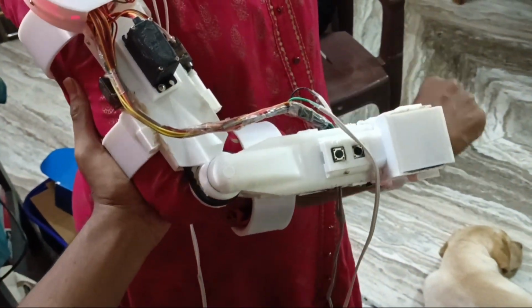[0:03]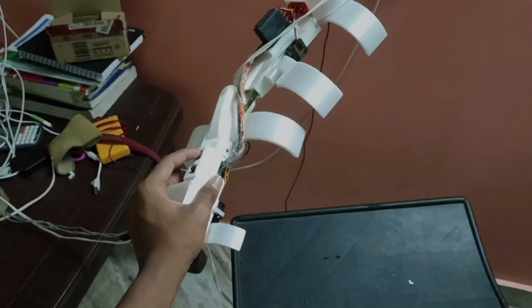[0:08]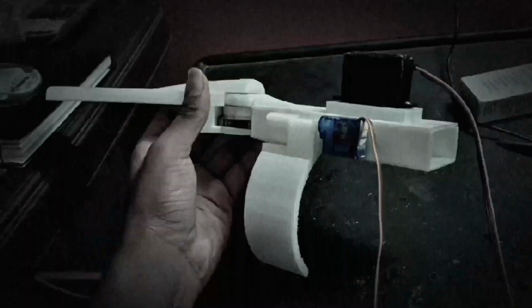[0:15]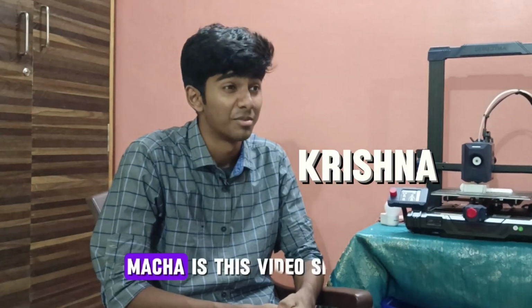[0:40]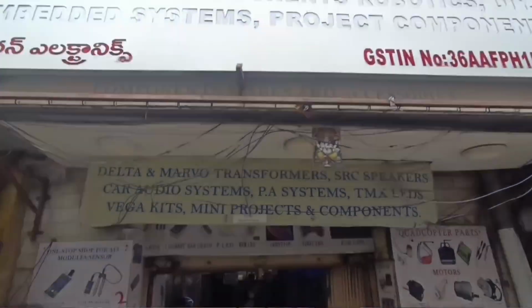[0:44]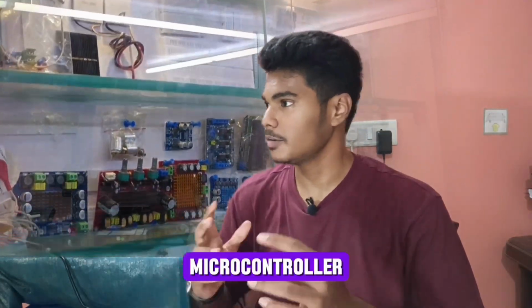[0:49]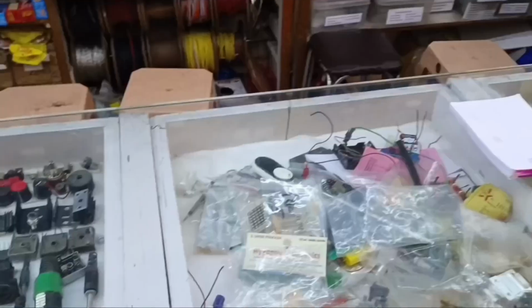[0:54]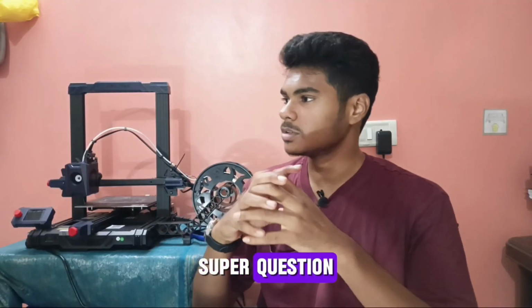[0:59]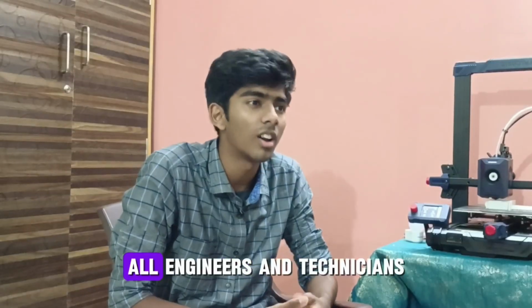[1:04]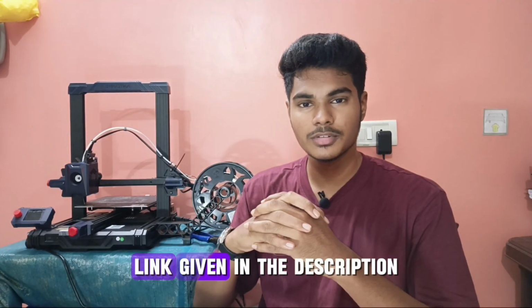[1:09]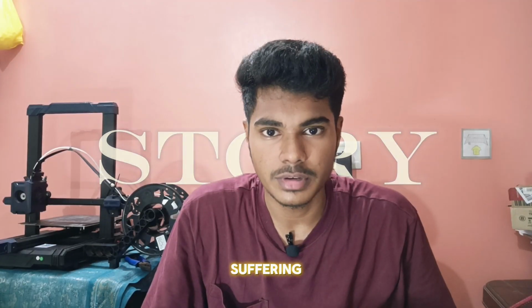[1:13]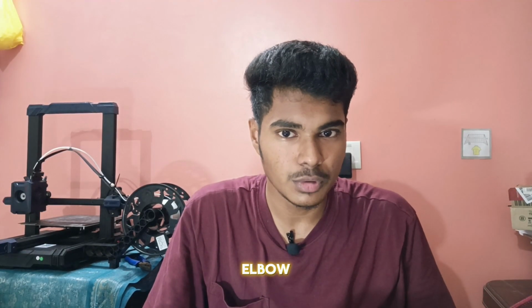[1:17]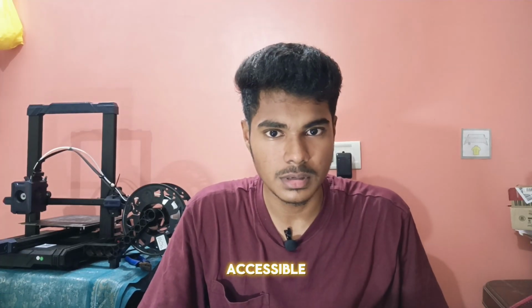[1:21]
Millions of people are suffering from muscular weakness and paralysis. Small movements like lifting an elbow become a challenge. Physiotherapy is slow, not accessible, and a painful process.
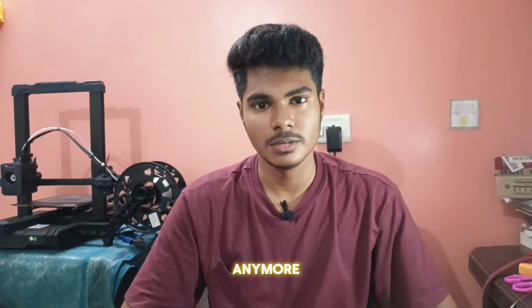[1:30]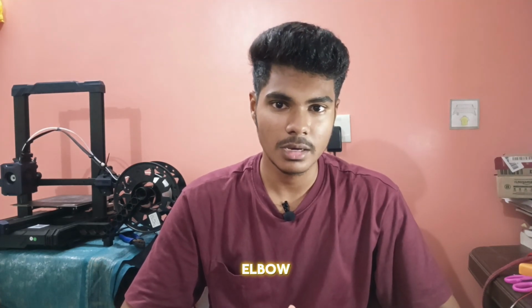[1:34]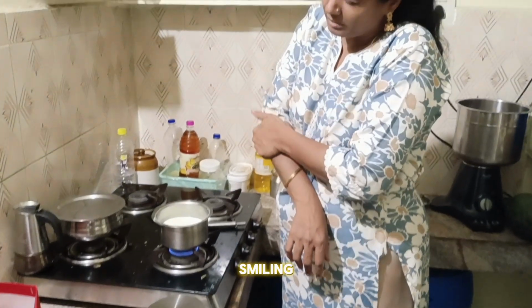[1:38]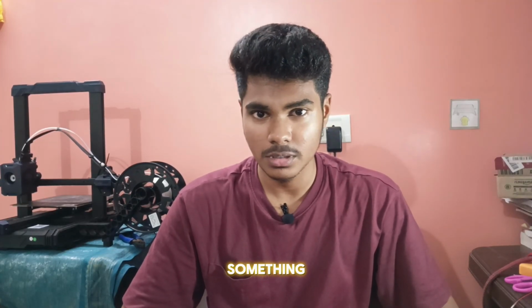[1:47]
My mother, the strongest person in my life. Suddenly, she couldn't lift her hand anymore. And later, we came to know that she had nerve damage in her elbow. I saw every day she was struggling and smiling. Still, she does the job. As a son, I want to do something for her. So I made a decision to do something which brings back what she lost.
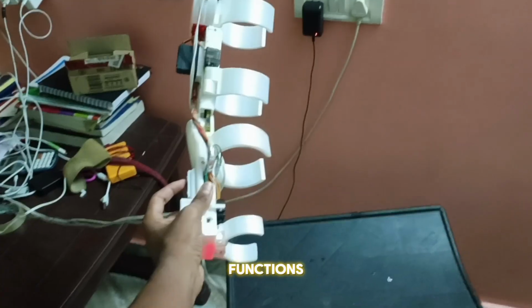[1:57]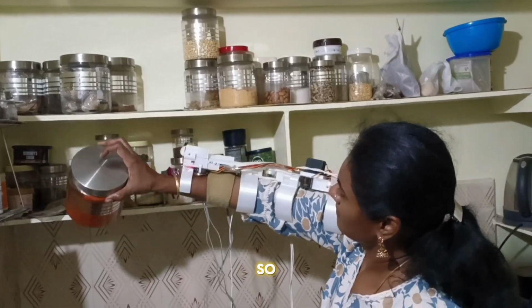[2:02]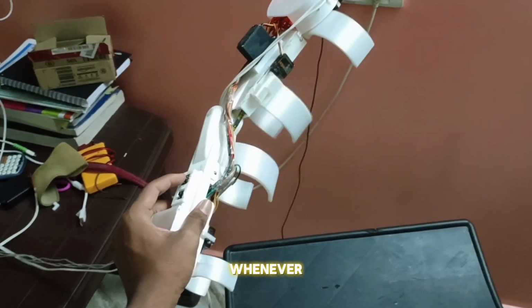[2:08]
So-called MYO-ASSIST. A wearable exoskeleton arm made of PLA. Generally, it has only two functions. Whenever my mom lifts something, the EMG sensor detects some strain, so the servo comes in. Whenever she is not lifting anything, the power to the servo is cut off. This is designed to assist whenever we need it.
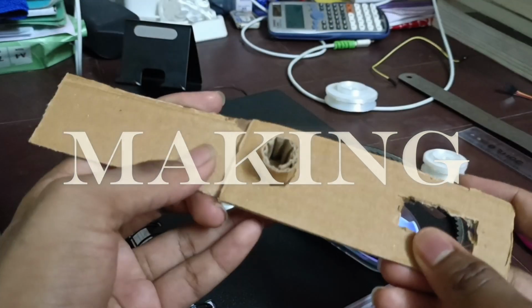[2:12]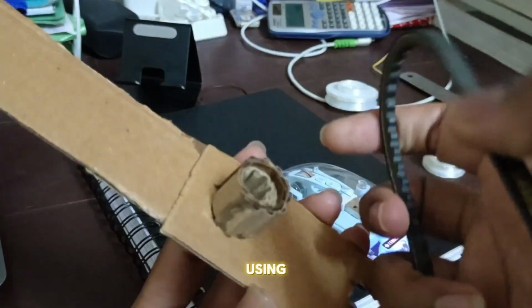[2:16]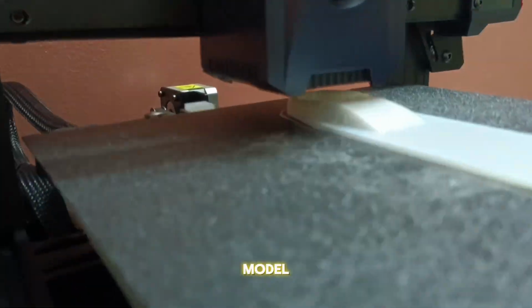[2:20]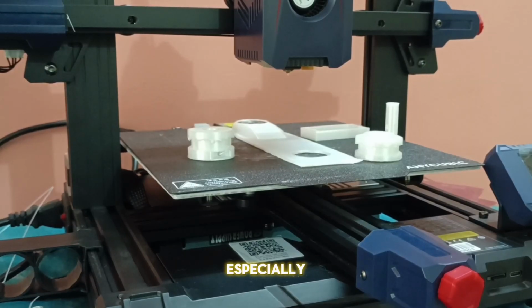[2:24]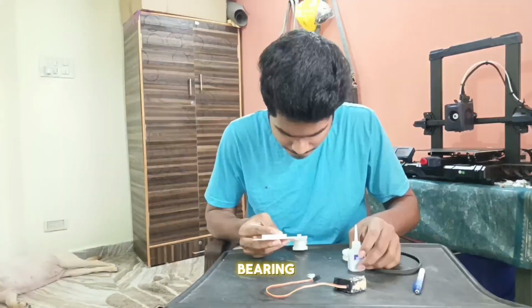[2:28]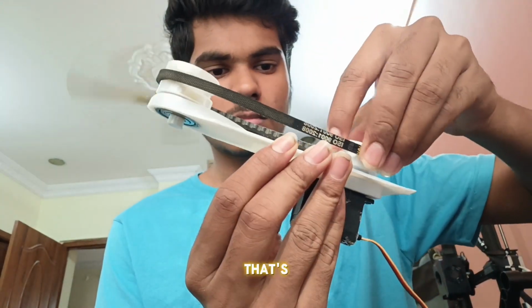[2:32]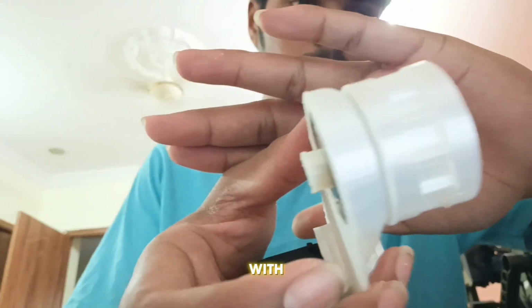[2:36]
Before we get started, let me show you how it works using this cardboard. After testing the idea with cardboard, I created a 3D model and printed it. Later, I even 3D printed a mechanism especially for this moving part. Alright, now I'm going to assemble the 3D printed parts with the ball bearing. Here comes our first problem. The belt is rotating, but the pulley isn't. That's because this pulley doesn't have any teeth. So now let's 3D print a new pulley with proper teeth.
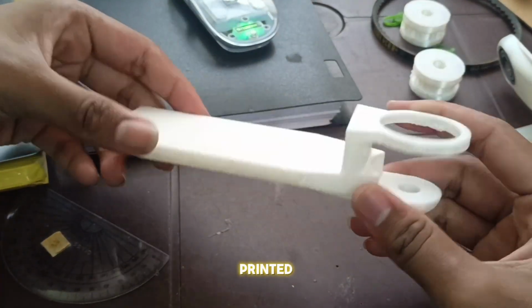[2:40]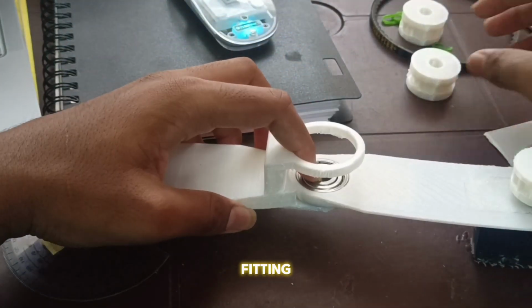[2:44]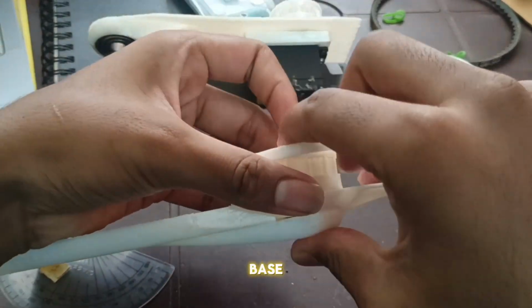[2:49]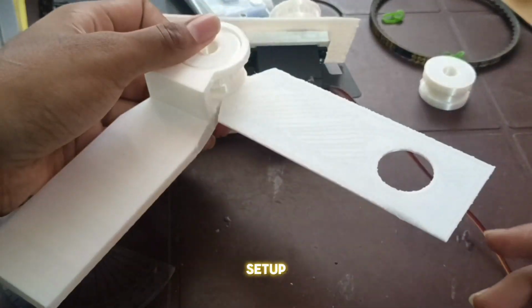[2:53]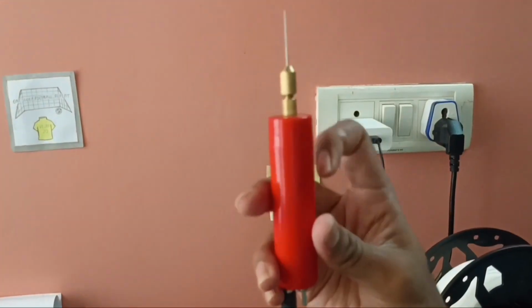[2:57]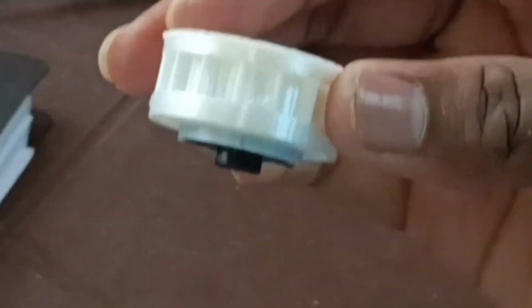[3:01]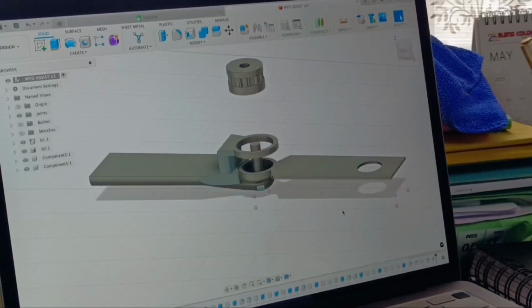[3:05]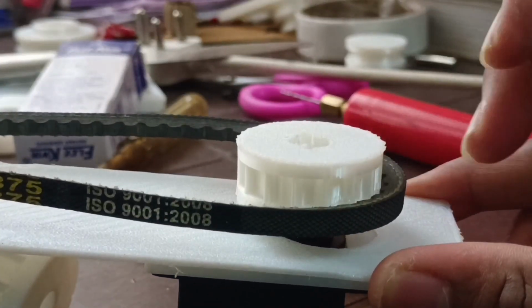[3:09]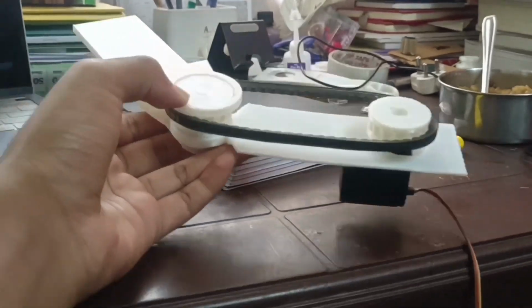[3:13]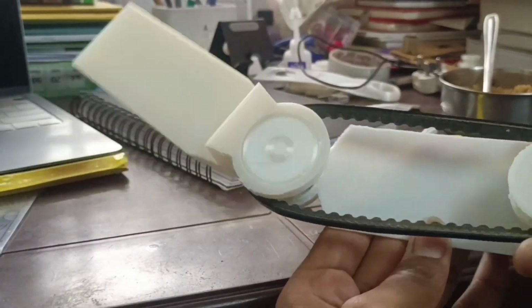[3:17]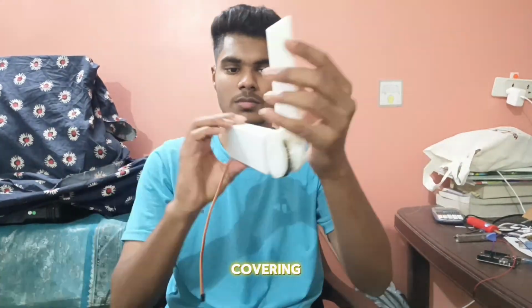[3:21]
Now let's begin modeling the base part of the forearm. And here is the printed part. Now the issue is that the already printed bicep base and forearm base are fitting together, but they are not rotating freely. So I printed a new bicep base with more flexibility than the previous one. Now let's assemble the entire setup from scratch. I 3D printed a custom covering plate.
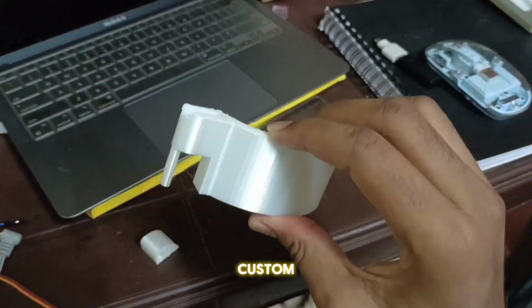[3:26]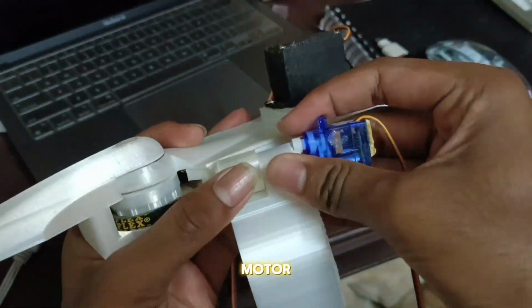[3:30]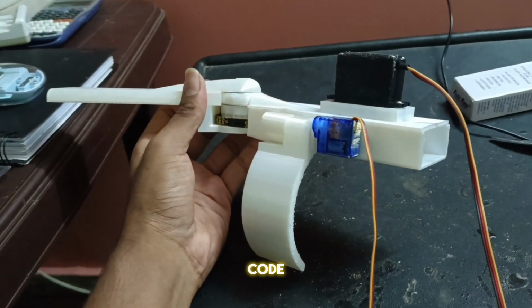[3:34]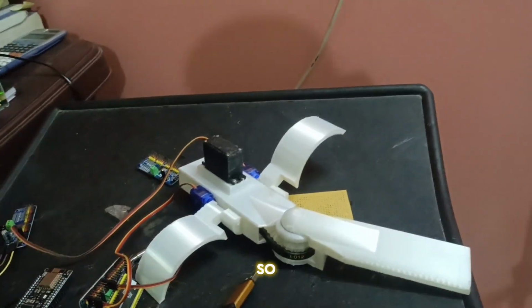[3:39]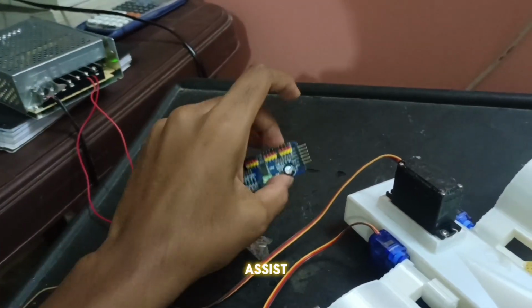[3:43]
Now let's move on to the gripper mechanism. And this is how the custom-made gripper looks. This is the position where we need to attach the gripper to the servo motor and then mount it on the MYO-ASSIST base. Now I just dumped a basic servo code to check whether it is moving at the perfect angle or not. And this is the PCA9685, which is the motor driver we'll be using in the MYO-ASSIST.
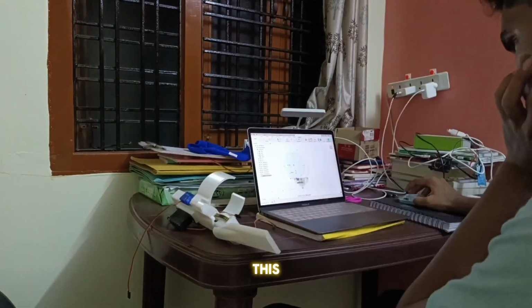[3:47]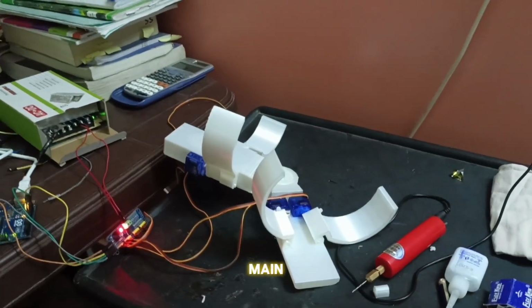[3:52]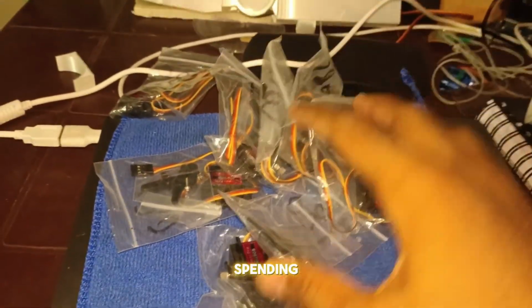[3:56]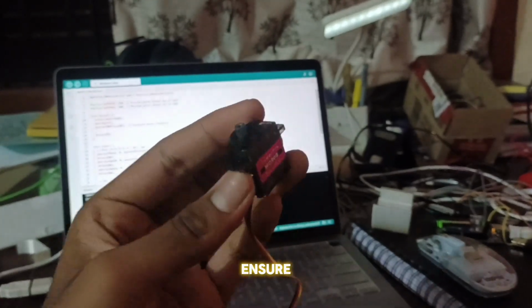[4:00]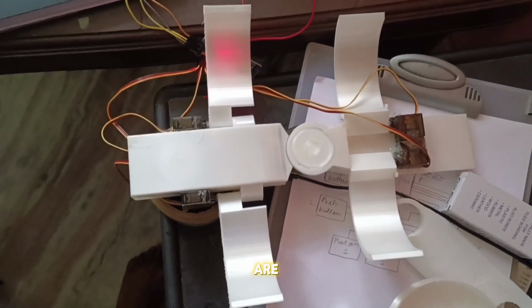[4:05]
Meanwhile, let's begin modeling the forearm gripper part of this project once again. This is how it looks, but this is where the main problem started. Two of the servo motor gears failed. So I ended up spending nearly 1500 to buy 12 metal gear servos just to ensure this wouldn't happen again. And now this is what I have achieved. The grippers are much stronger with the metal gear servos installed.
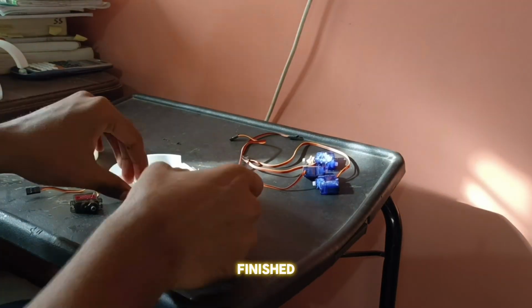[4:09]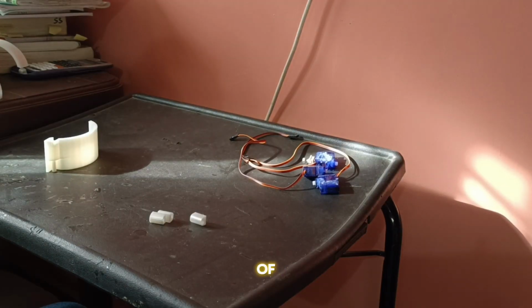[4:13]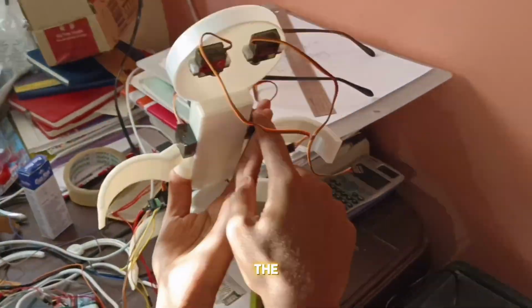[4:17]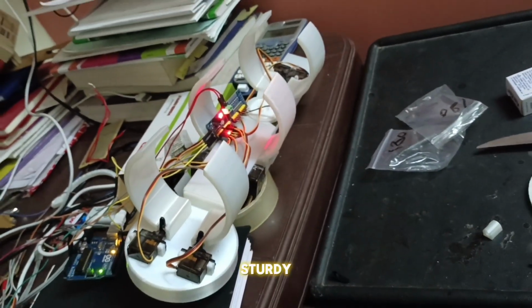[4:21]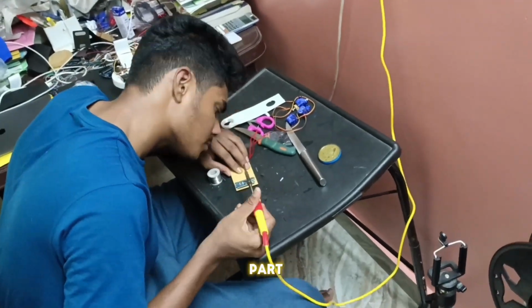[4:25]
At the same time, I finished printing the battery holder base and the gripper part for the top layer of the bicep. Now let's begin assembling the entire sub-assembly onto the MYO-ASSIST body. The three grippers look very satisfying and sturdy. Before jumping into the fourth gripper part, let's complete the brain of the MYO-ASSIST project.
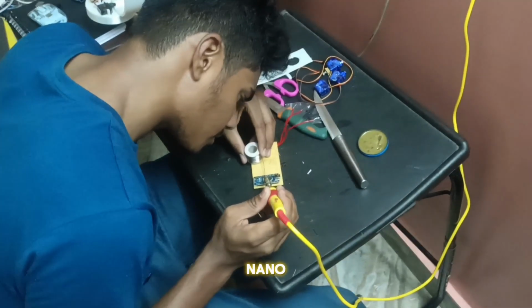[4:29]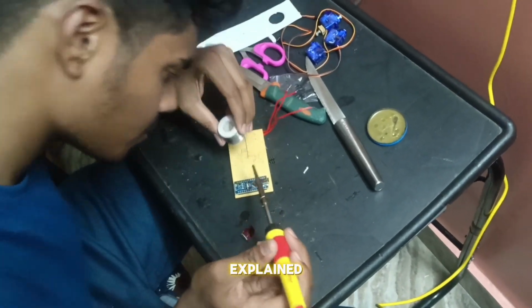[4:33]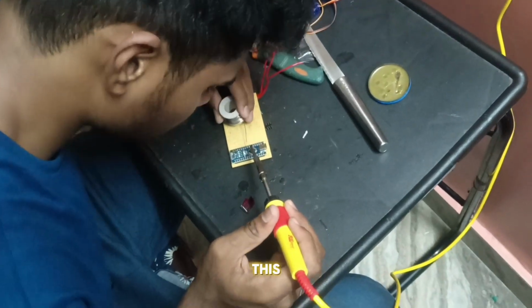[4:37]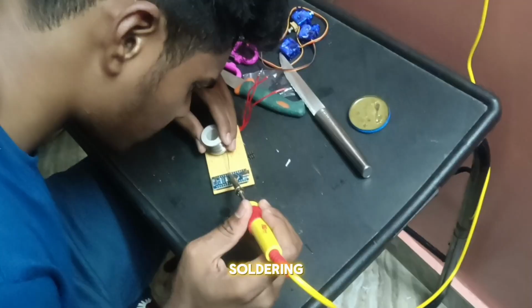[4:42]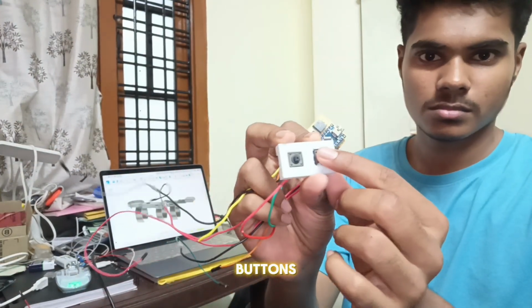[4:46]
This is the Arduino Nano, which acts as the brain. I've soldered it together with the MOSFET. As I explained earlier, the main function of MYO-ASSIST works through the MOSFET. This soldering process is shown here. You can use this drawing as a reference for soldering. Finally, I completed the soldering part, including two buttons.
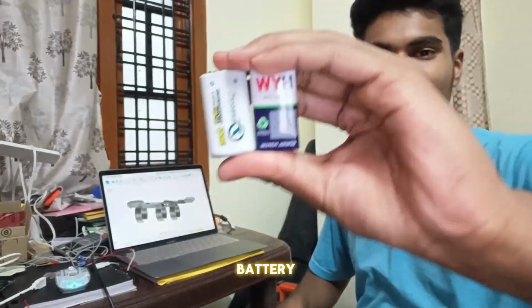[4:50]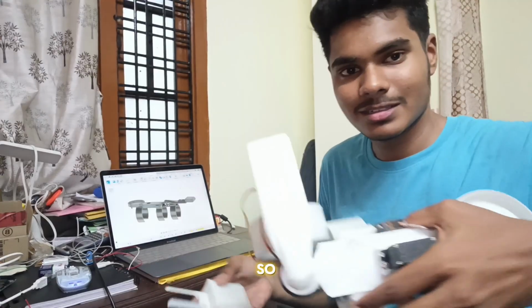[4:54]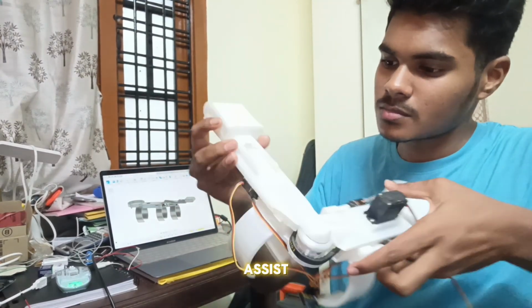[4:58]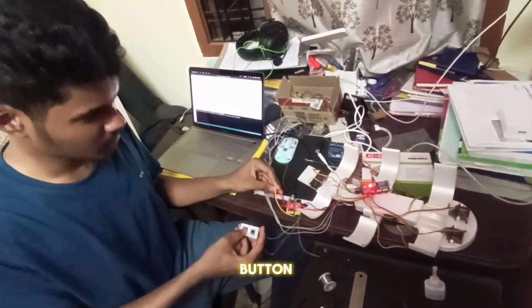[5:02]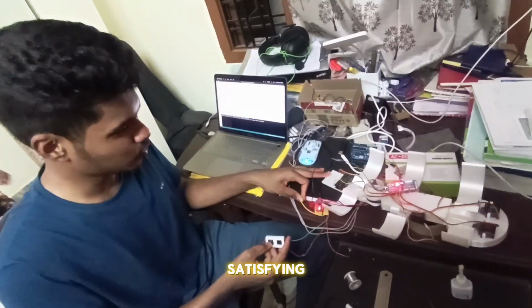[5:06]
Meanwhile, I also 3D printed the holder for the EMG sensor's battery. And this is the EMG sensor. So this is how the EMG sensor battery holder will be placed in the MYO-ASSIST body. Alright, it's time for the test drive. As I press the button, the gripper of the MYO-ASSIST should activate. This is so satisfying for me, after 20 days of hard work.
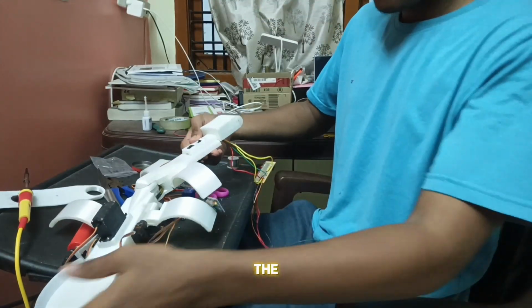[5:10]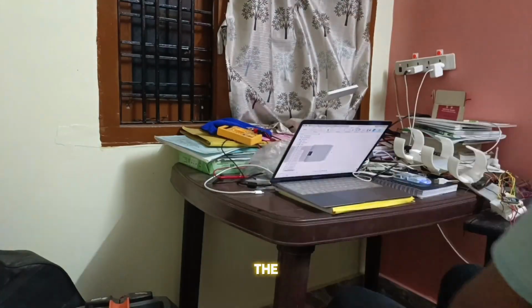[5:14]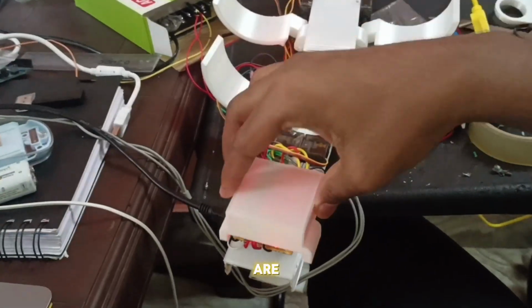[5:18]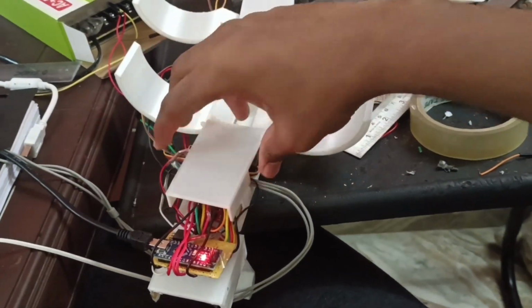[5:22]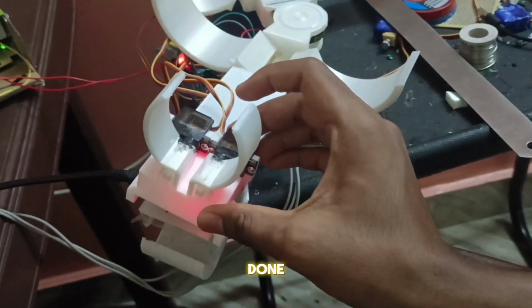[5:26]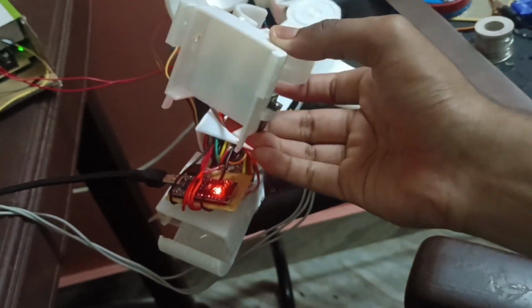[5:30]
Now I permanently fix the buttons onto the MYO-ASSIST board. After that, I begin modeling the new cover part for the brain setup. This is how we are going to cover the brain. Even this wire we are going to cover. And now, the semi-final part of the MYO-ASSIST is done. The fourth gripper has been successfully attached to the skull section of the MYO-ASSIST. So this is how it's going to be placed there.
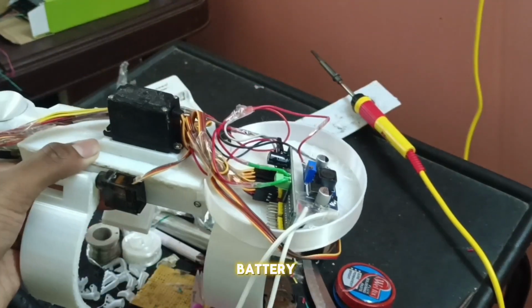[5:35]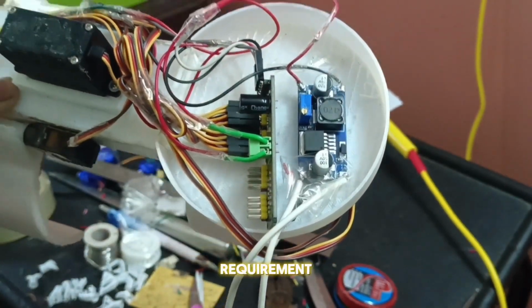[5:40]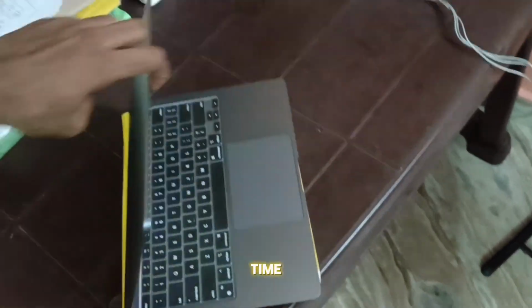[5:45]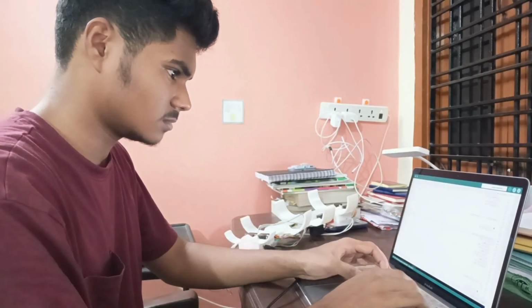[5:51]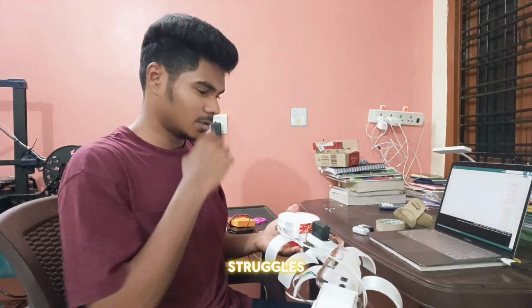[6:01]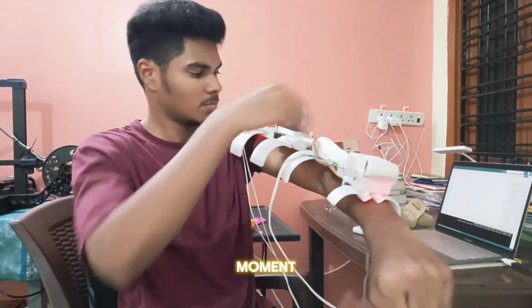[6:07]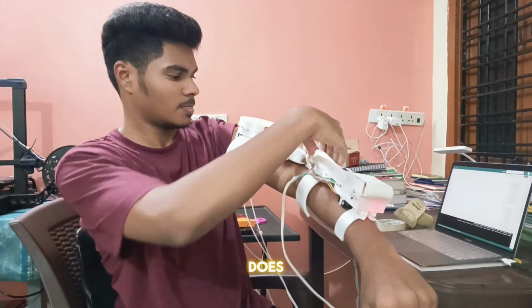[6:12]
Unfortunately, I couldn't use a battery, so I went with a voltage booster, which increases and decreases the voltage depending upon the requirement. And with that, we are finally wrapping up the making of MYO-ASSIST. And now, it's time to upload the code and bring MYO-ASSIST to life. This is it. After everything, the struggles, the failures, the long nights, it all comes down to this moment. I don't know if it will work or not, but I'm praying it does.
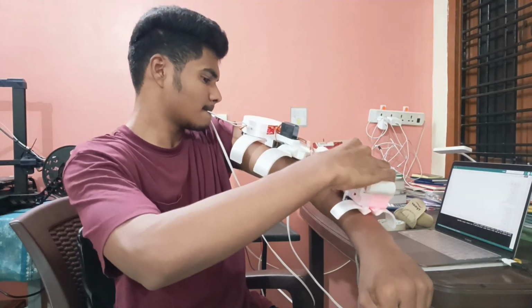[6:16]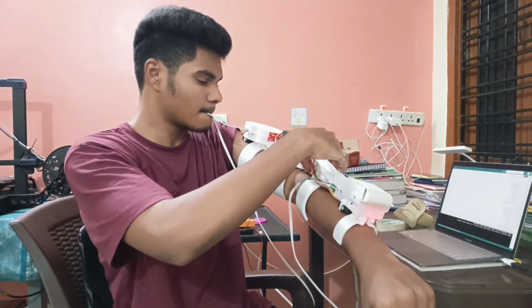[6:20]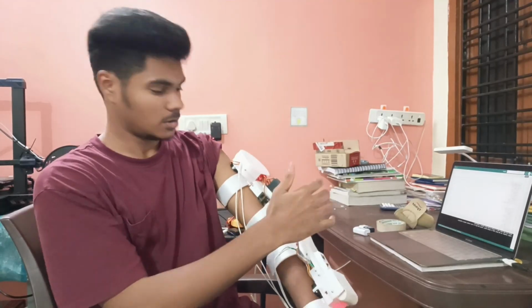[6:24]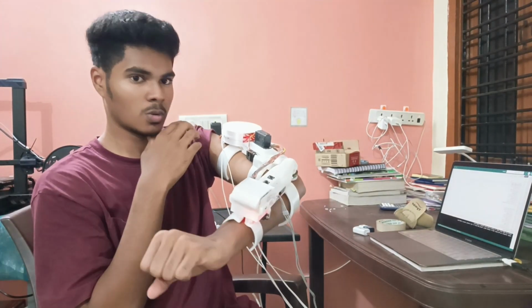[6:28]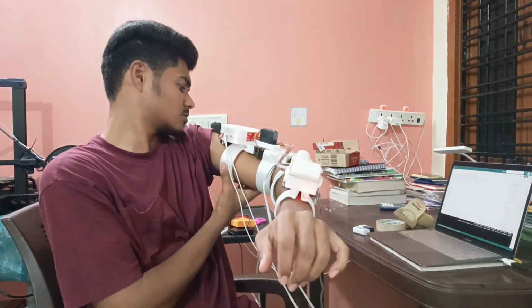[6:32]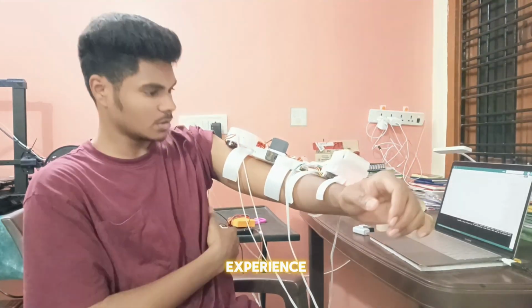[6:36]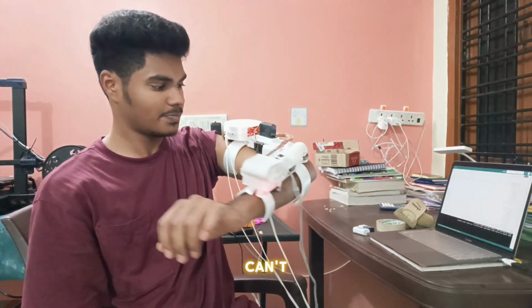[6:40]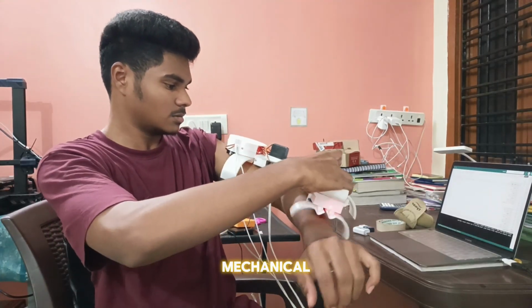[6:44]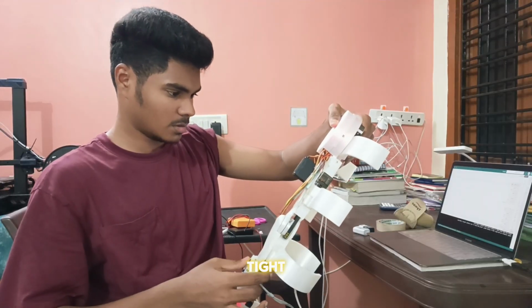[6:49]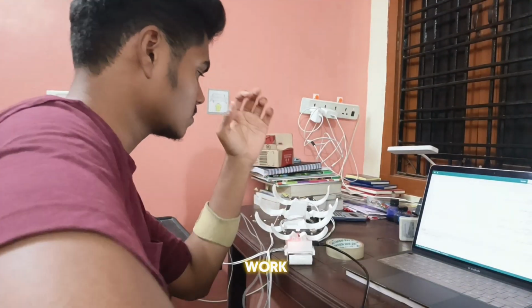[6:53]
Wearing this was truly a wonderful and emotional experience. Feeling it move in sync with intention was something I can't quite describe. However, there is still one challenge. The mechanical movement is a bit stiff, as the servo motor is currently too tight. But this is just the beginning. In the future, I will definitely work on improving and upgrading it for smoother motion.
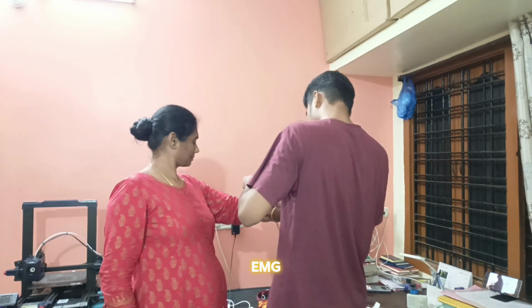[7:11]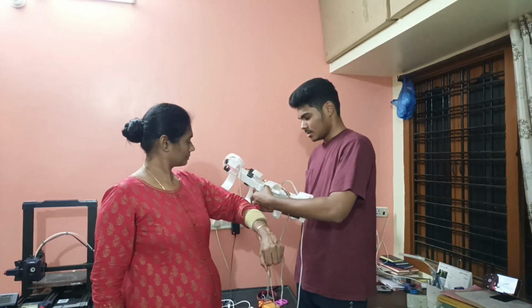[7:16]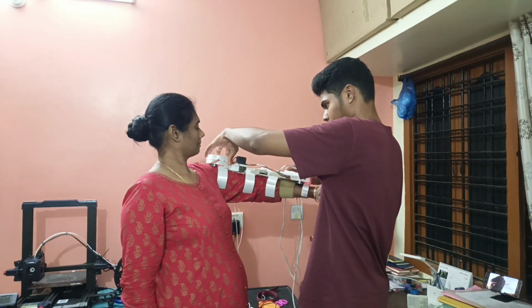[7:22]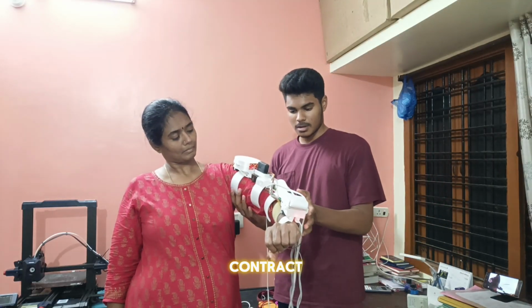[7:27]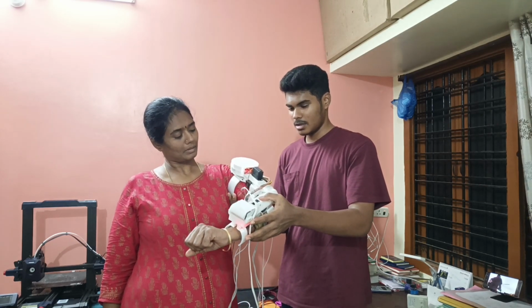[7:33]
And now, with a heart full of hope and gratitude, it's time to place this creation in the hands of the one who inspired every step of this journey. Now I am gently placing the EMG sensor on my mother's forearm to detect her muscle activity. I'm carefully fitting the device onto her hand. I explain how the device functions. When her muscle contracts, the EMG sensor picks it up and signals the servo.
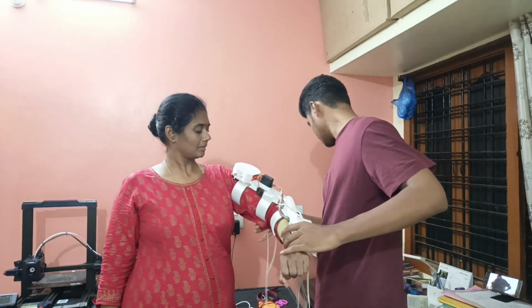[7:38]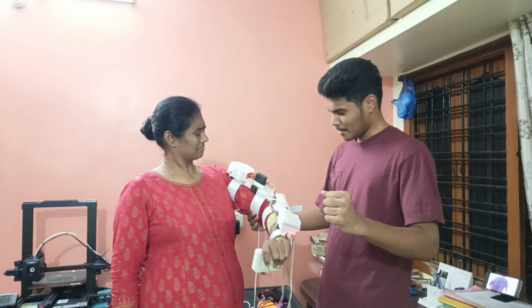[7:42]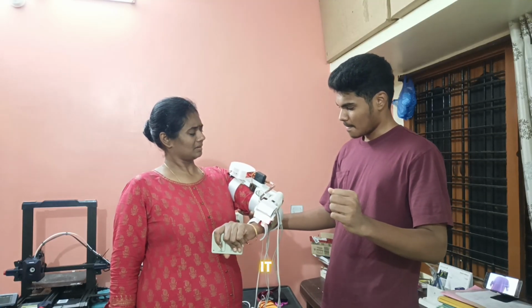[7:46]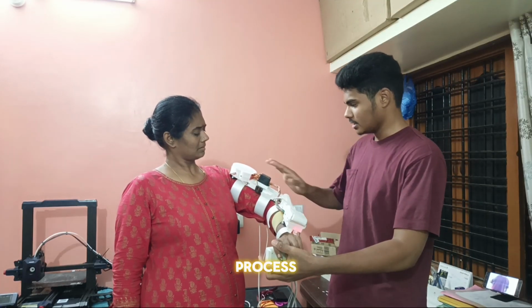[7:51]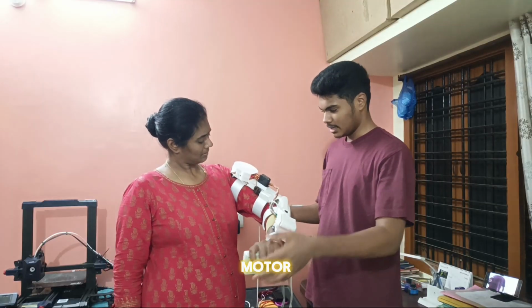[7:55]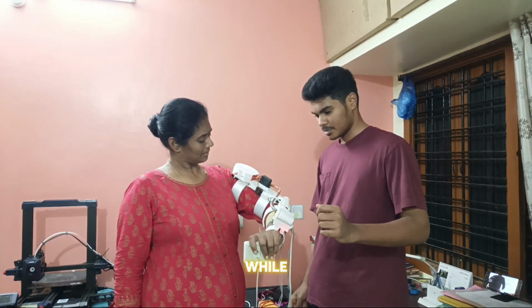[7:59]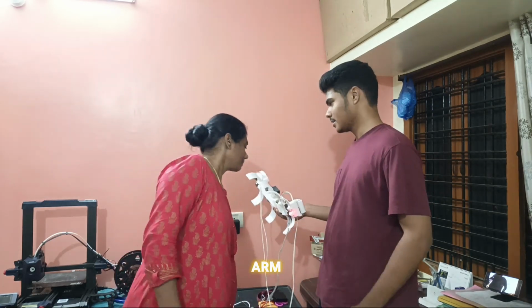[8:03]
I am assisting her in trying her first movement with the arm. She attempts to move by herself, but slowly it starts working. I explain the internal process, how the signal flows from the muscle to the sensor, then to the motor. I guide her gently on how to move while wearing this device. Now I slowly remove the MYO-ASSIST from her arm.